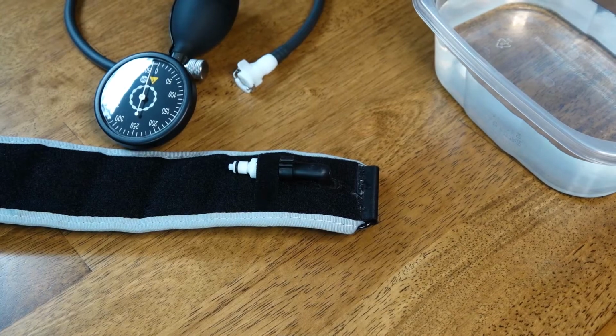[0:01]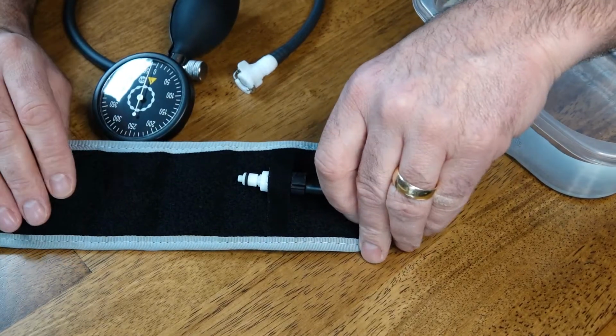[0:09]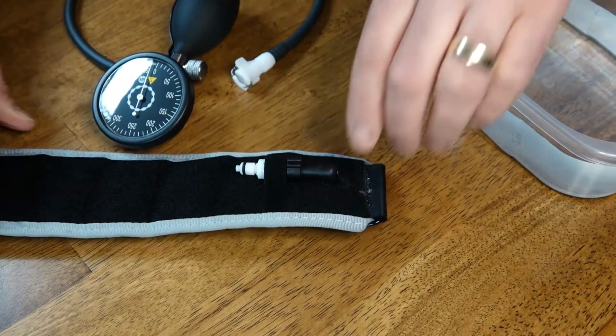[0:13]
Hello everyone, this is Paul from Ortho Eval Pal, and what I'm going to do today is talk about how to fix a valve in a B Strong blood flow restriction cuff.
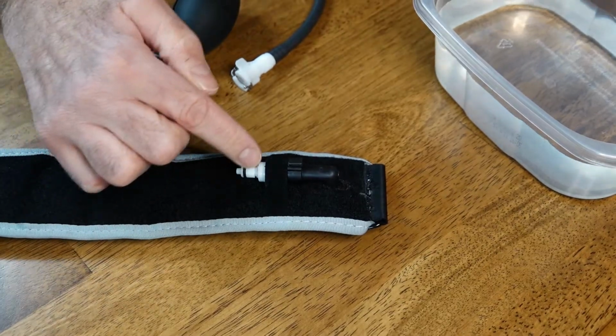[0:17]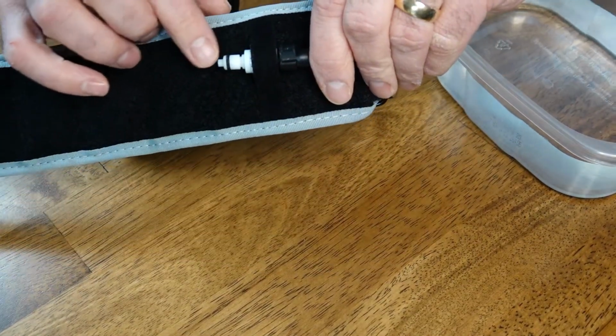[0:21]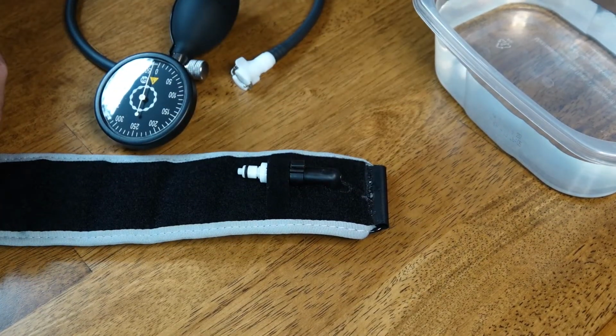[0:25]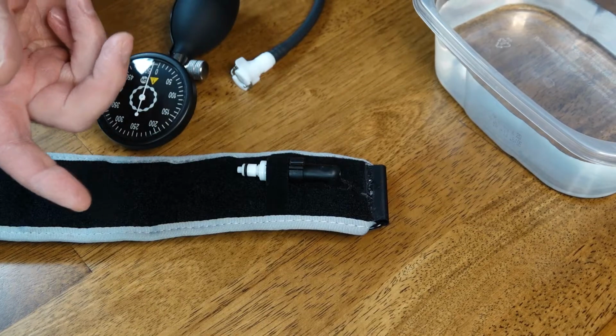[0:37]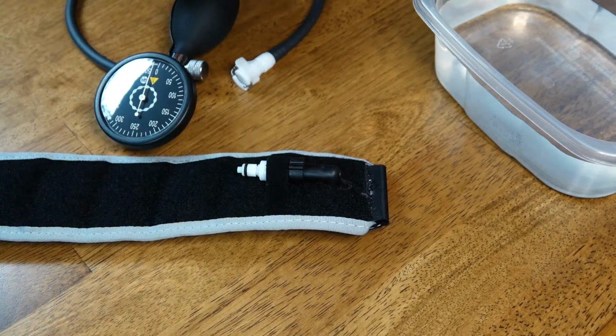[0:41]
Sometimes, you get a little junk in the valve and it can get stuck in there and cause the valve to leak. This one happens to be one that we use on a regular basis, and we just noticed that it started losing air a little bit while using it with a patient, so we had to keep refilling it. So today I'm going to just do a little demo on how you can fix this valve, and you can also use this demo to replace the valve if you had one, but we're going to see if we can fix it just by cleaning it up a little bit.
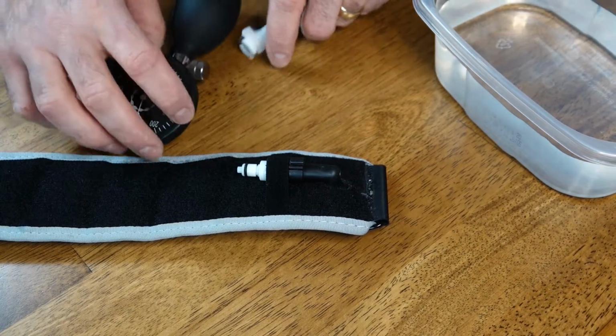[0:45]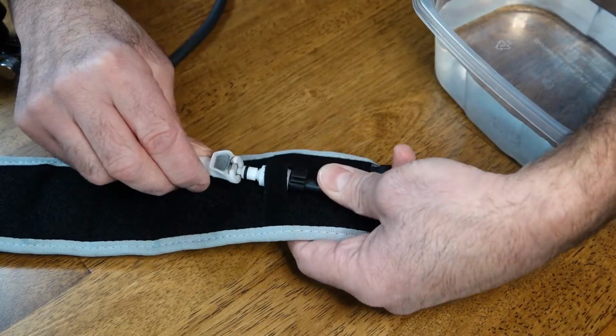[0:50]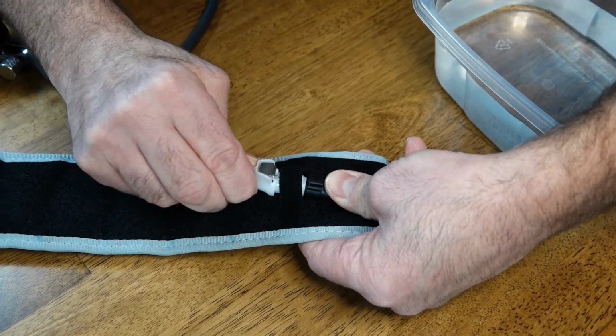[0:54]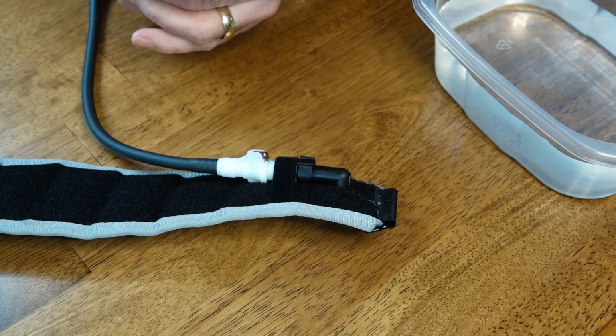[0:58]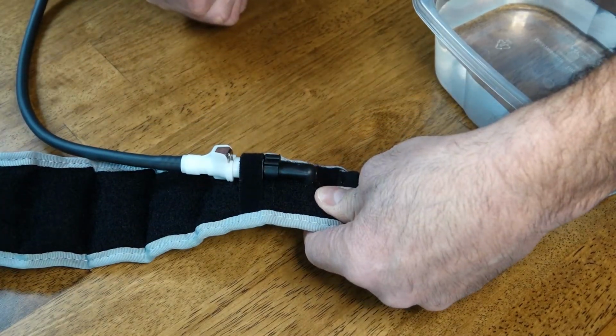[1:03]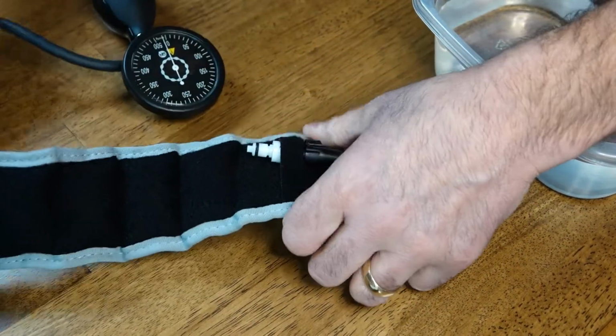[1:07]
So first thing we do is we want to make sure that we know where that air is being lost from. So you take your pump, and you take the female side, put it into the male side, and then you fill it up with air. I'll probably put about 300 millimeters of mercury into it right there. And then I will take it off. Then you can see how the band is nice and full right now.
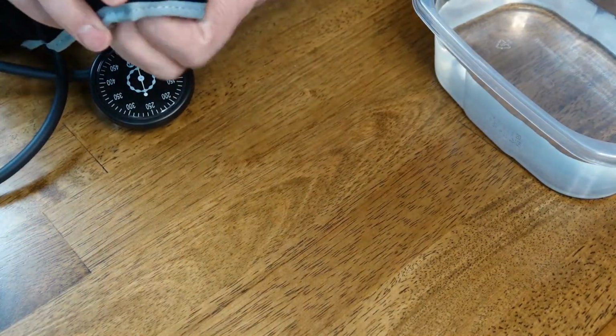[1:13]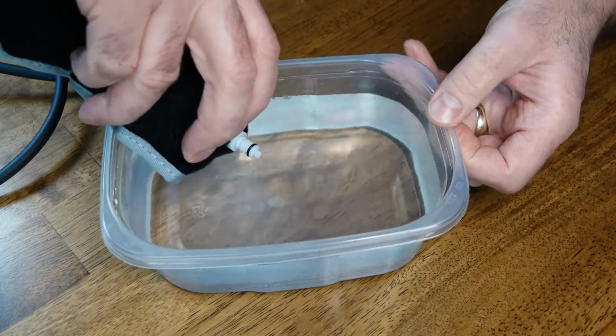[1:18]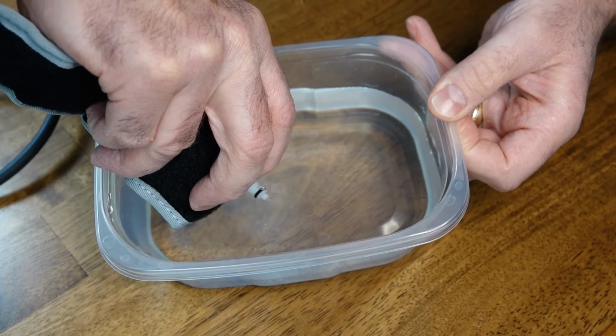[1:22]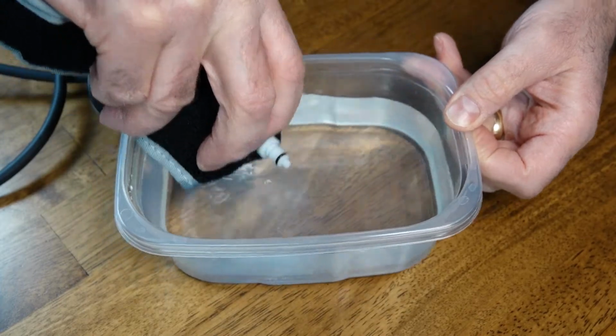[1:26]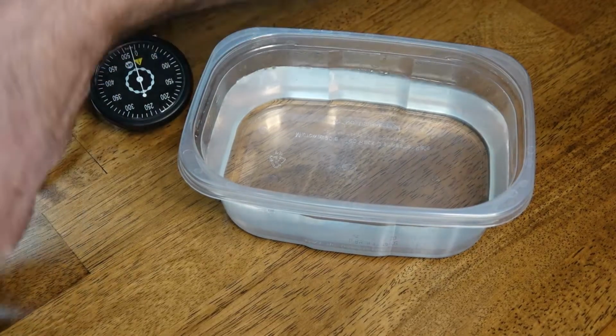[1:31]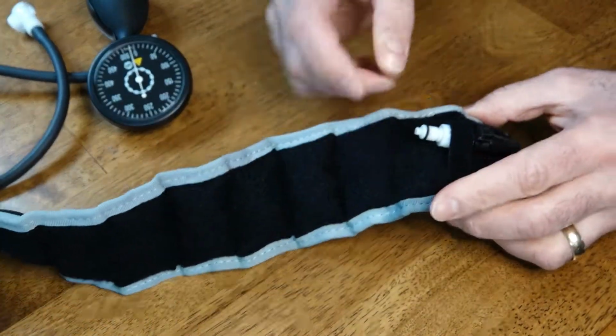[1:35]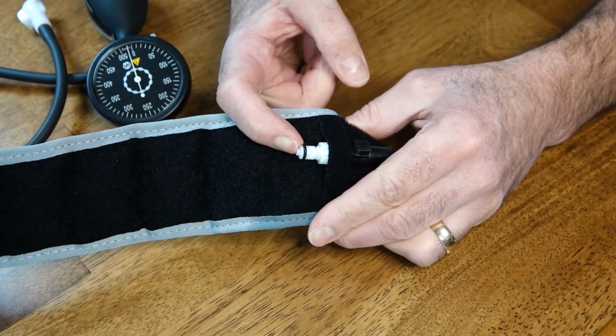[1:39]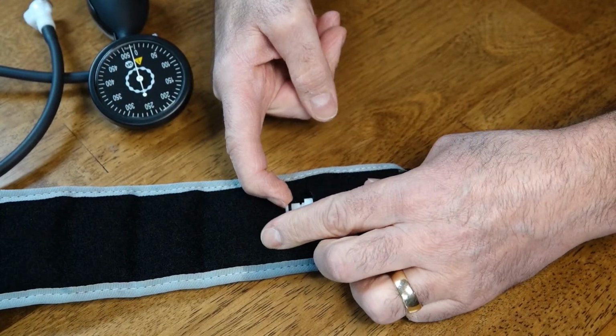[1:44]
I'll take this tip, and I'm just going to put it in the water to see if we get any bubbling. And as you can see right there, it's really coming out of that tip. So there must be something stuck in there. So what we're going to do is we're just going to dry this off. Move our water aside. And I'm just going to let the air back out of the band. So the air is pretty much out of it.
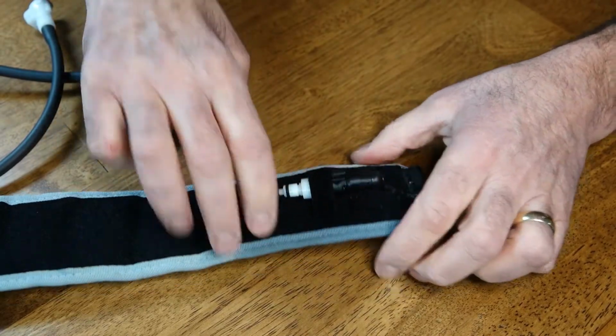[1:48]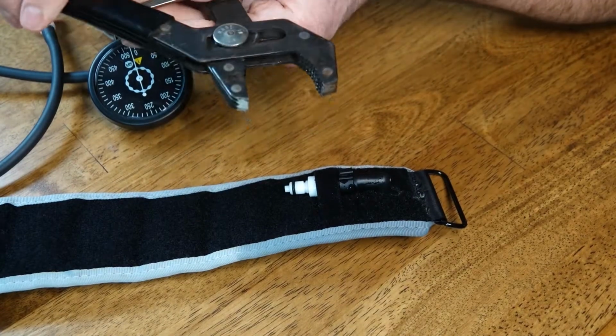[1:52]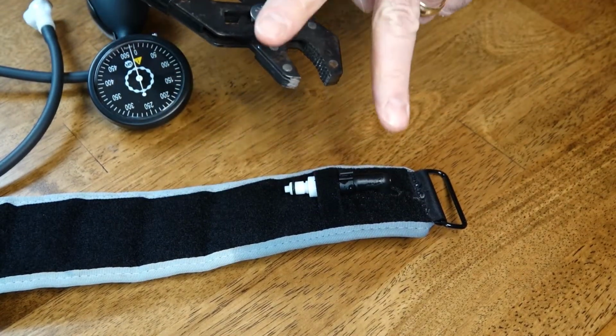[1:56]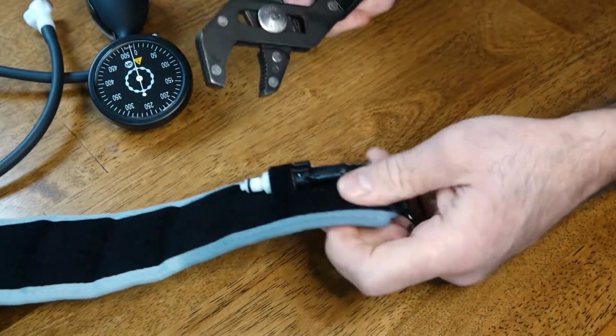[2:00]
Now what we need to do is we need to take this tip of this valve off. And this can be a little bit tricky, so I like to use a pair of pliers like this that close up and down like that, rather than a long nose pair of pliers, because they don't work as well, and I've tried them already. So this works really well.
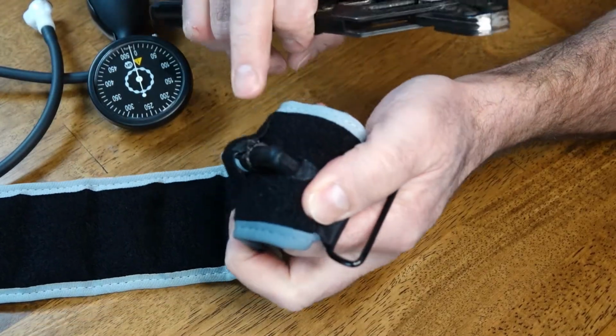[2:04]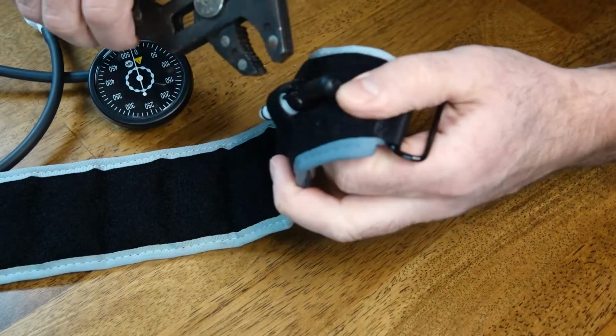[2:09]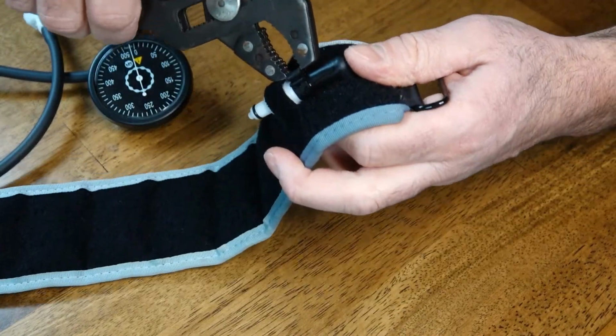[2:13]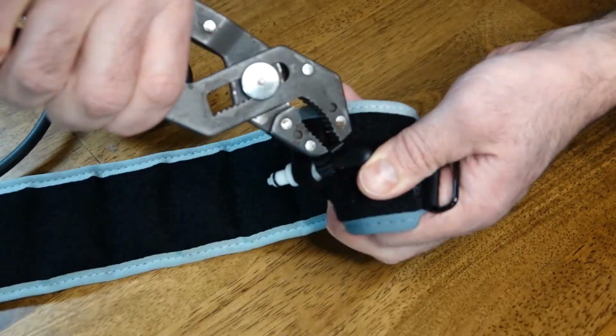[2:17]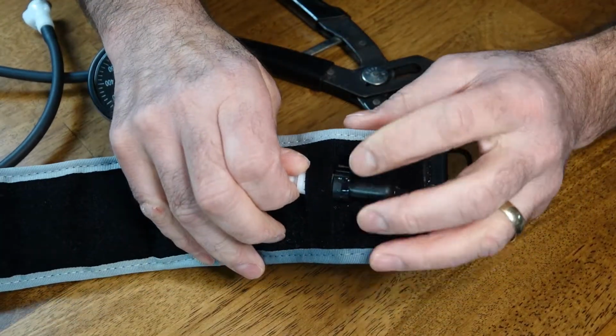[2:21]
Now, here's an interesting little clip. Right here, as you can see, there are some teeth right here. So you want to take your pair of pliers, and this can be a little tricky, and grab it just like this, and twist it down and off. So now you can see how this clip just came off and loosened up there.
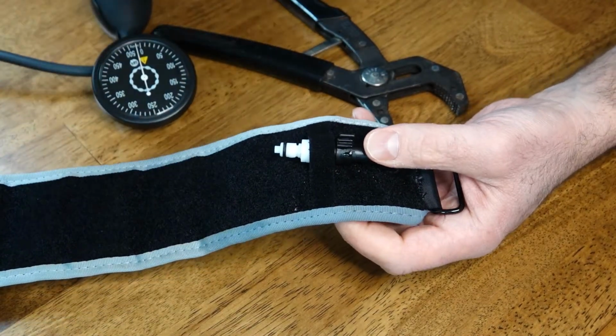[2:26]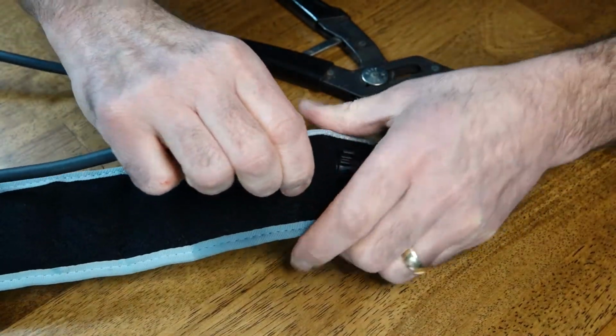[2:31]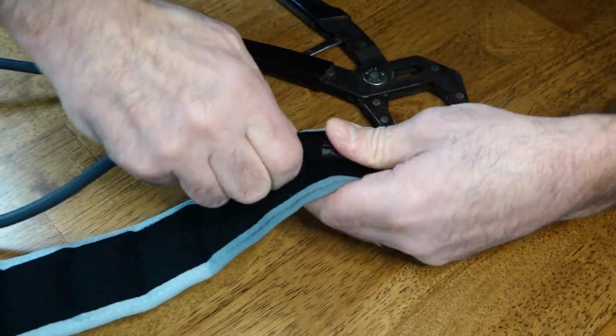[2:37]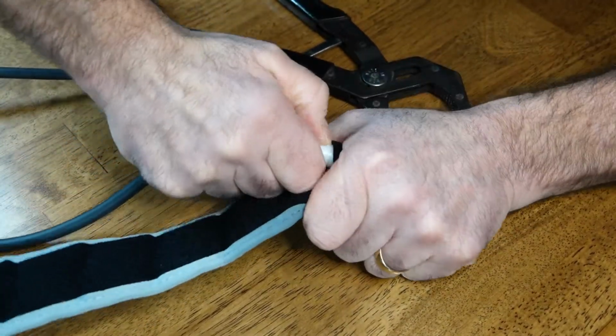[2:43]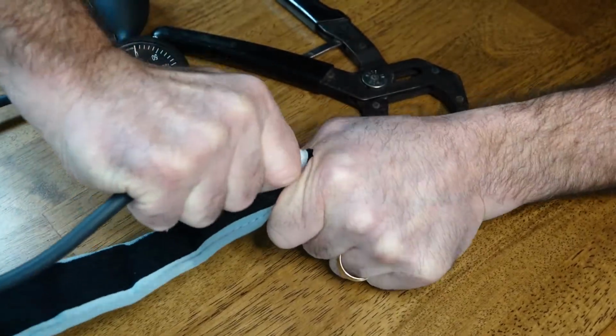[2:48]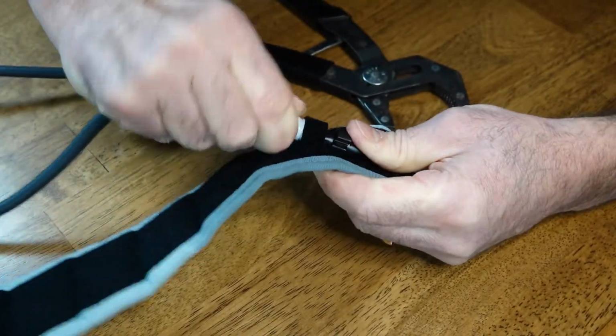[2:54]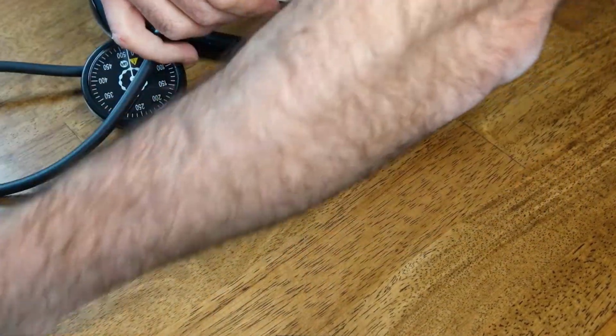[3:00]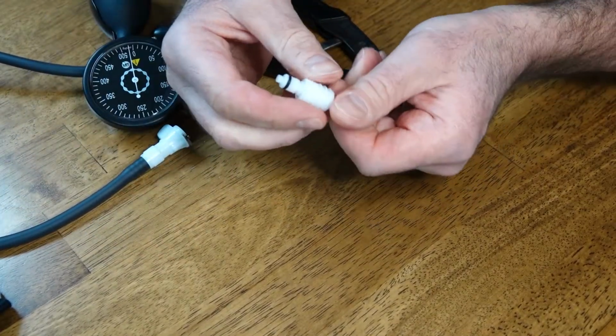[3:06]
So now you want to take the female side of the clip, snap it into the male side, and it'll help to try to pull this valve out. And you just have to work at this nice and easy, back and forth. It can take a little bit of work to get it out of there, especially the first time. It's a-coming. There we are. And just about out of there. Okay, so now we have that out. We take this off, and you can see how that valve is made.
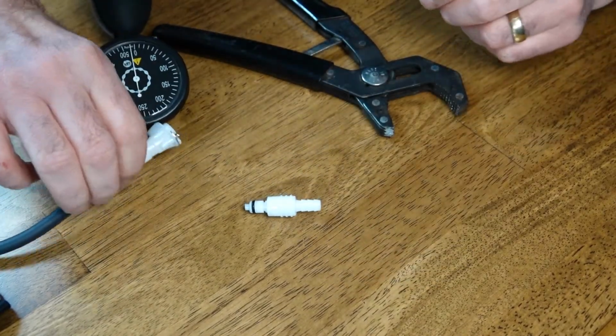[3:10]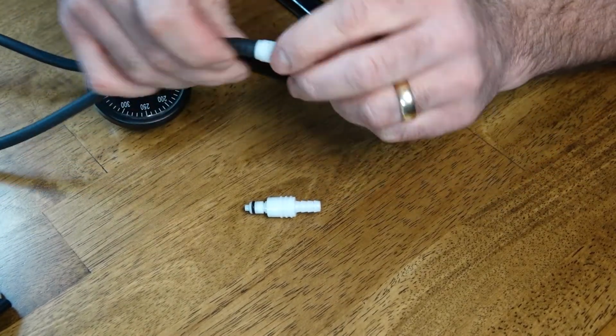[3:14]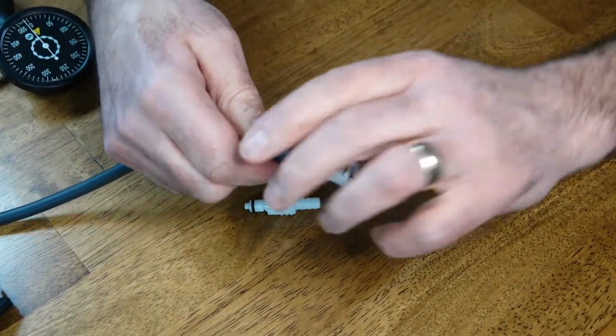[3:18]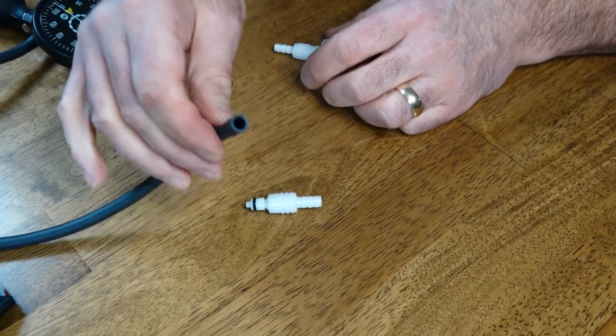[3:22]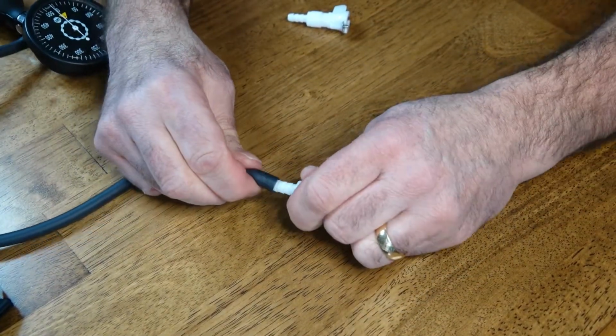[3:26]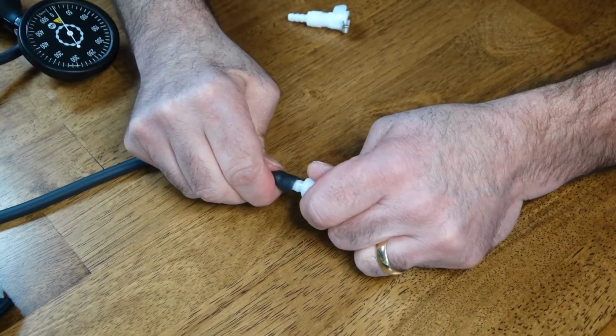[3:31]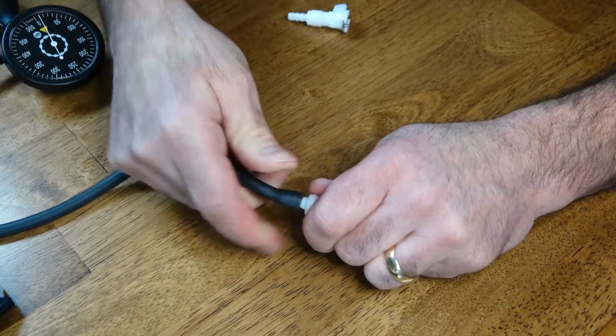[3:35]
Okay, so one of the things we're going to do here is we're going to just get some air pressure and even a little bit of water through this. So what you do is you take your pump, and just take the hose off, just like this, and switch it and put it back onto this valve. And you're just going to kind of push it right back on there, just like this.
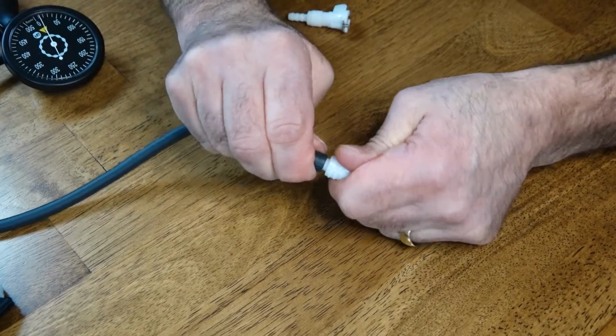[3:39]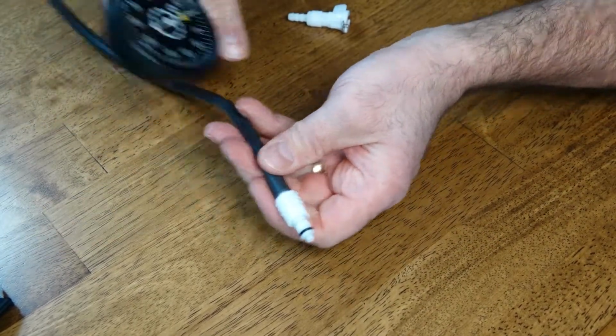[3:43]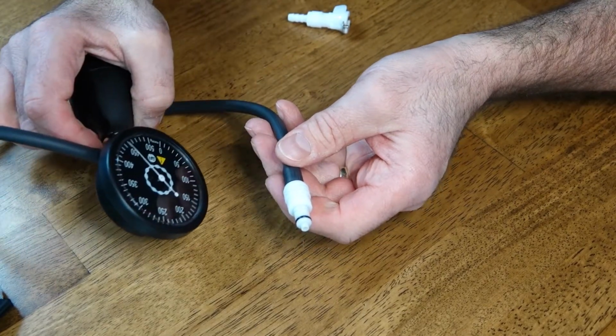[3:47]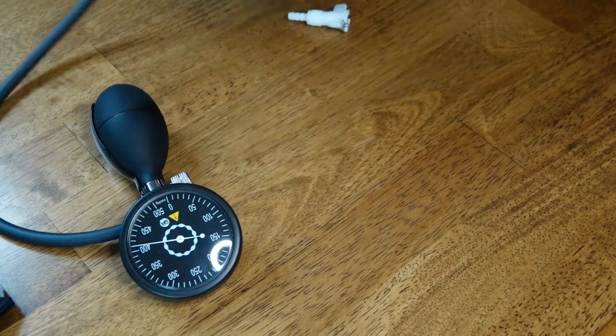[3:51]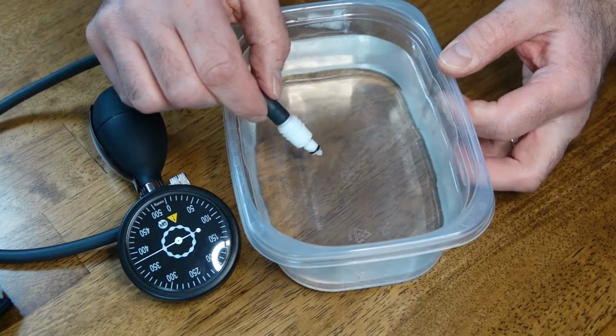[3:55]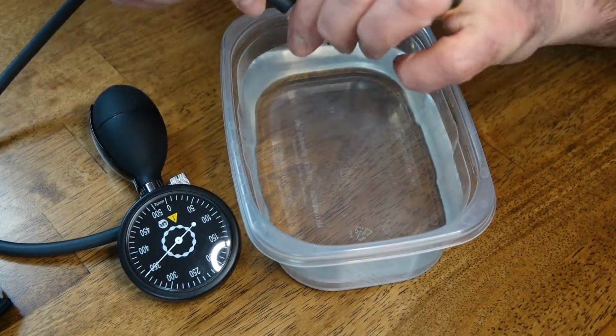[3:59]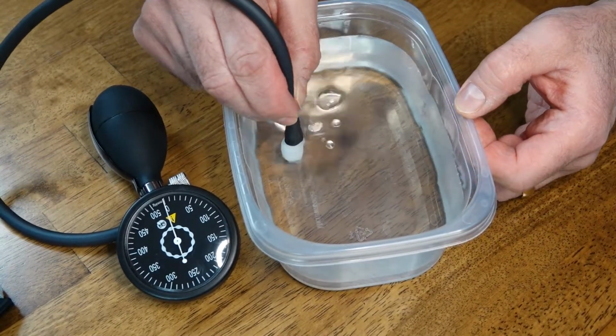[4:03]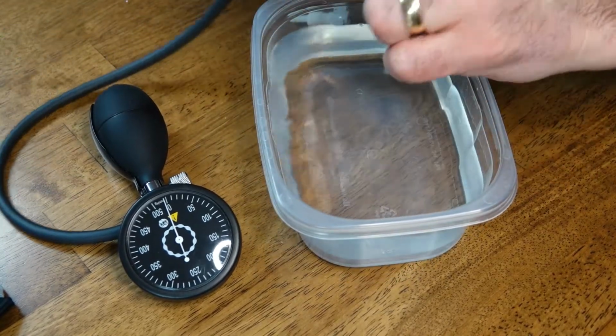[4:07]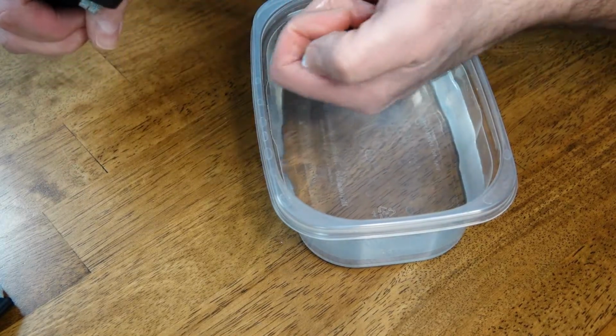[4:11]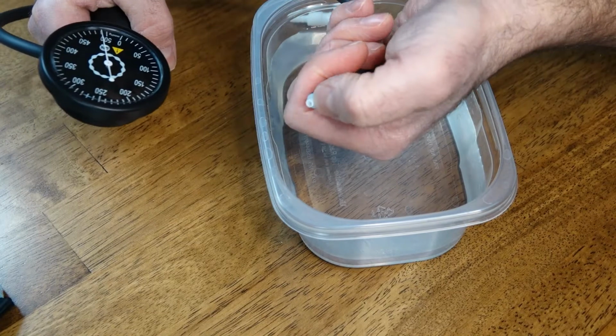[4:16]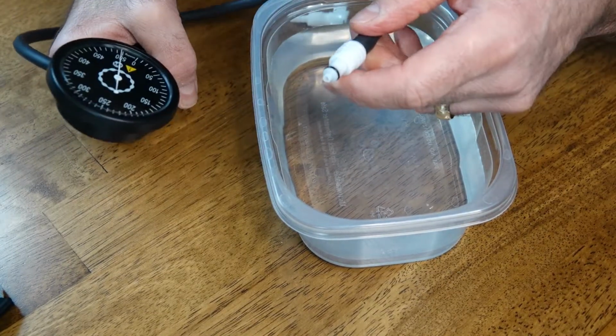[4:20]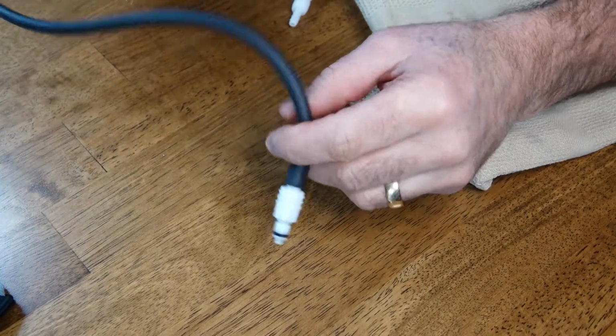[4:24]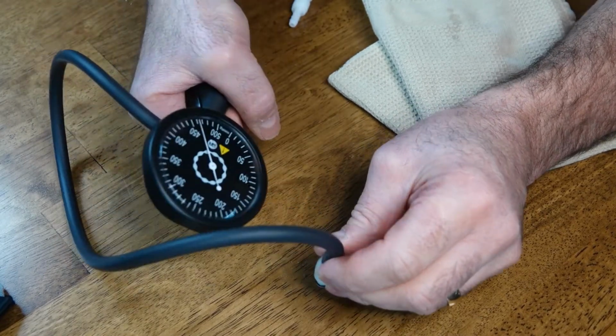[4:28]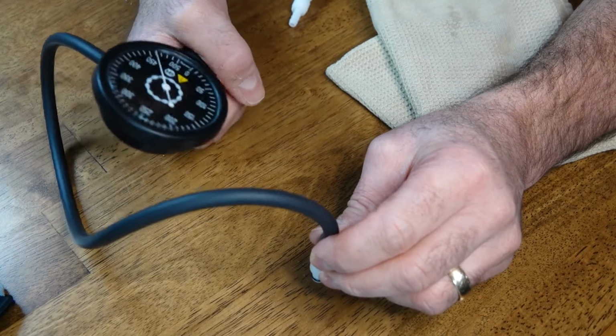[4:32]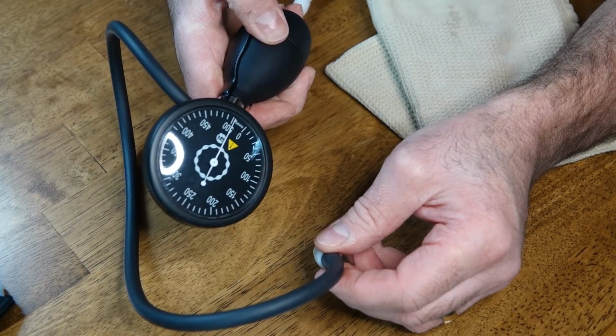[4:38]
Now what you can do is you can put a little pressure into that valve. And as you can see, we're losing some air here. Let me check to see if it's still just the valve that is leaking. So you can see the air coming out of it now. So what we're going to do here is we're just going to get some air going through here. Now, after you have performed that several times and allowed the air to come through at a real quick rate of speed, you'll notice that our pressure is now holding, which it wasn't doing a while ago.
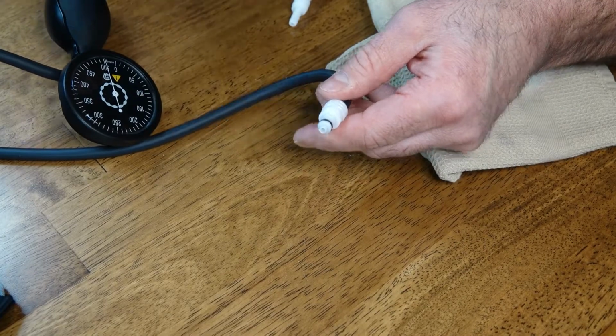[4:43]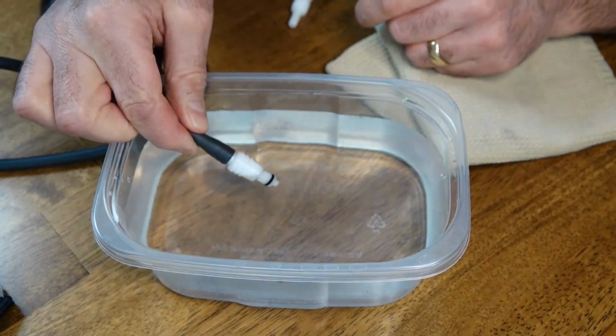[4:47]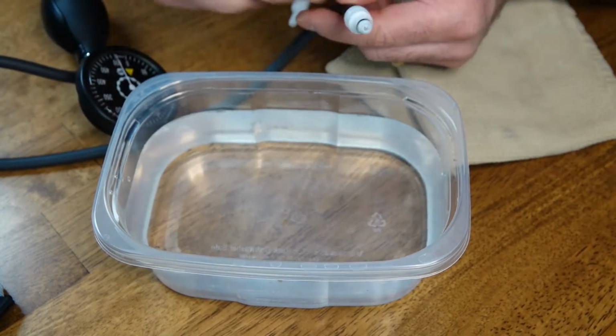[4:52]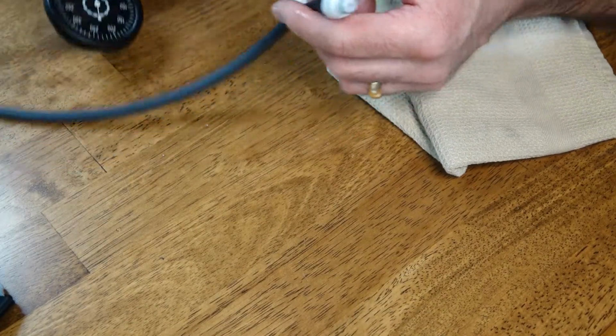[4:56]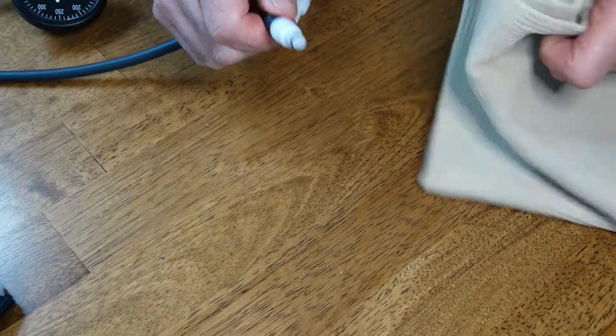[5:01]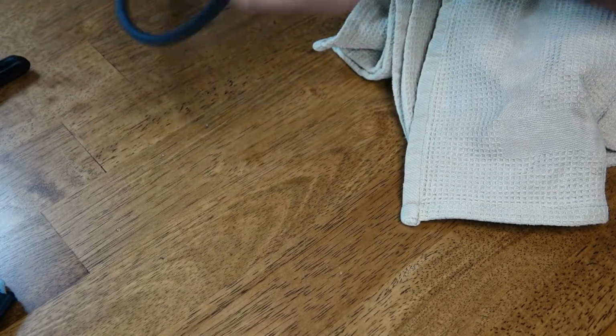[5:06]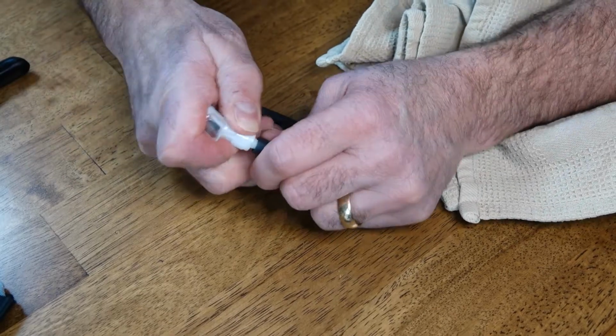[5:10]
And just to test that valve, go ahead and take it back to your bowl of water and see if there's any leaking. And we don't have any bubbling going on there. So, with that being said, we're ready to reassemble our strap. So we're going to take this one off. Now you can place this tip back onto your pump so that the pump is ready to go, and we can put that aside.
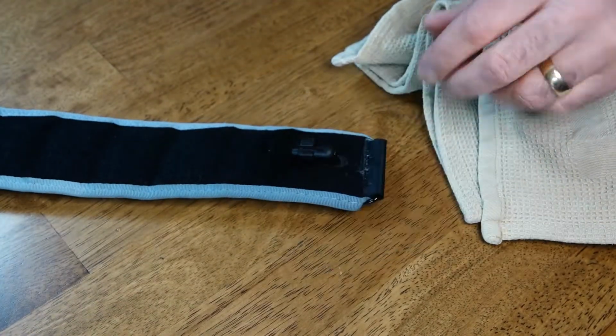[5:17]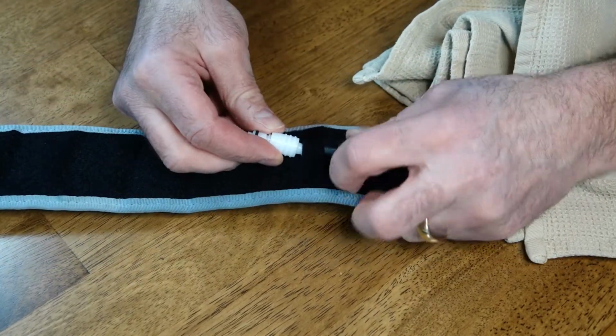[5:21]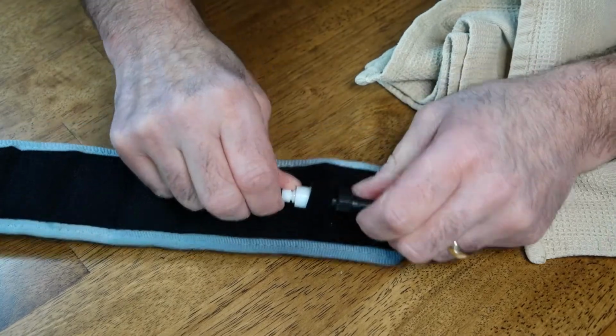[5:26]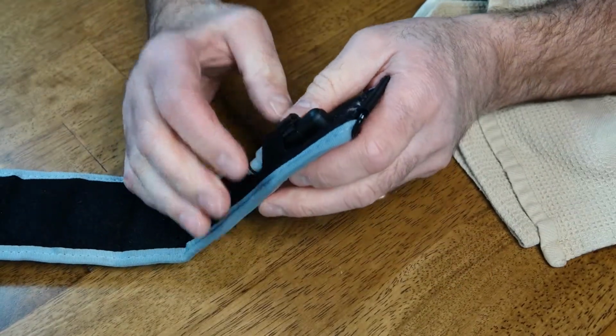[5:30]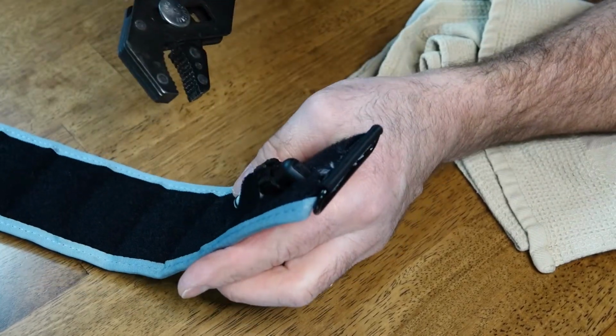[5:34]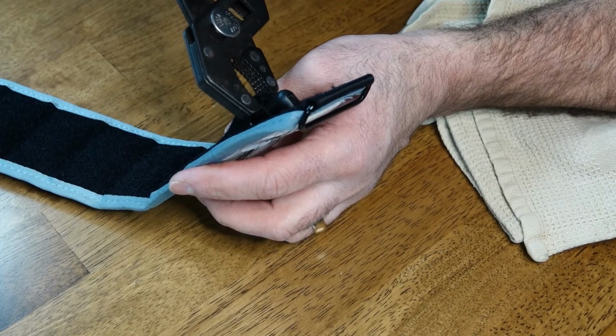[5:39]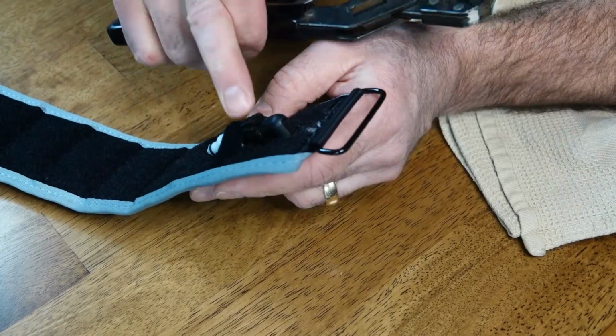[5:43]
You'll take the male end of your valve, put it back into the female side, really give it a push, get it solidified right in there so it's nice and tight. And now we need to place this crimp ring back in place. This is where these pliers really come into play nicely, where you can just take both edges like this, give it a squeeze, and the crimp ring snaps right in place to hold the valve right where you need it to be.
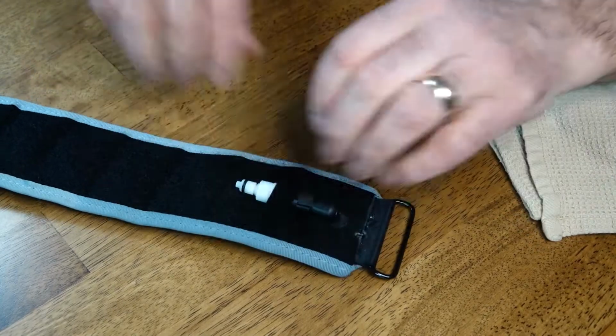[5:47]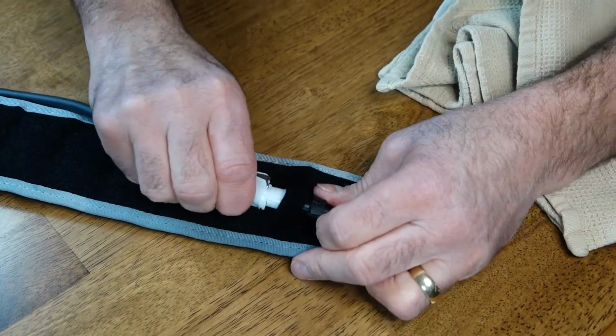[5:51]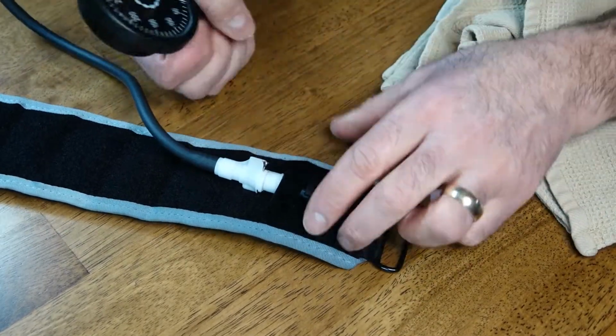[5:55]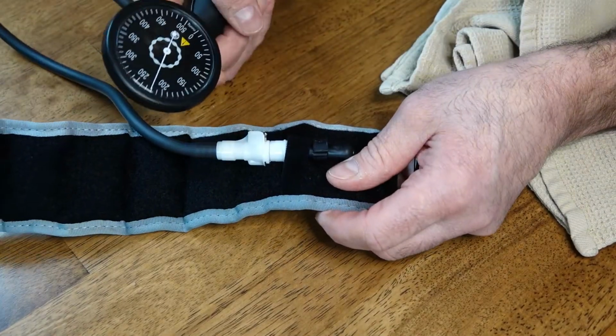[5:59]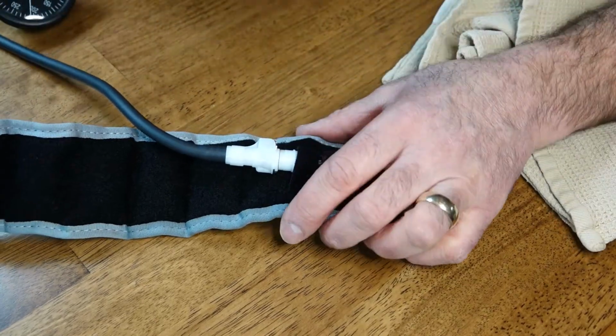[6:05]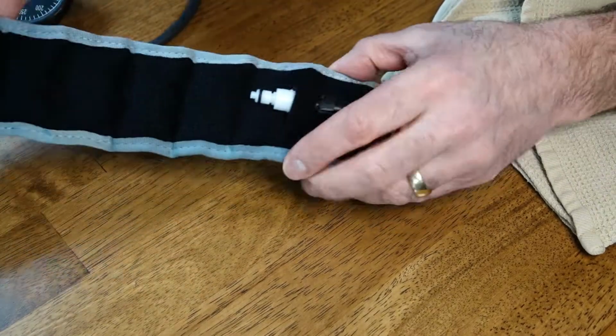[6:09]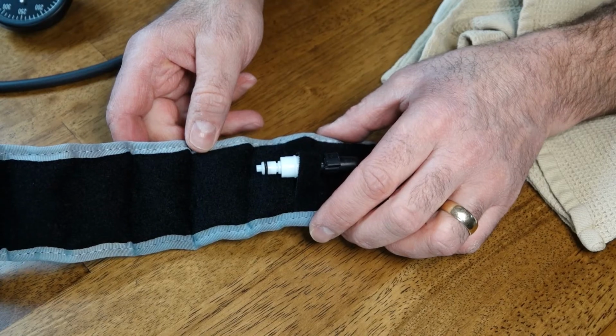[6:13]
Now we are all set to go by placing the pump back on, getting the band on our patient, and there it's holding pressure nicely. That is how you repair a valve on a B-Strong blood flow restriction band.